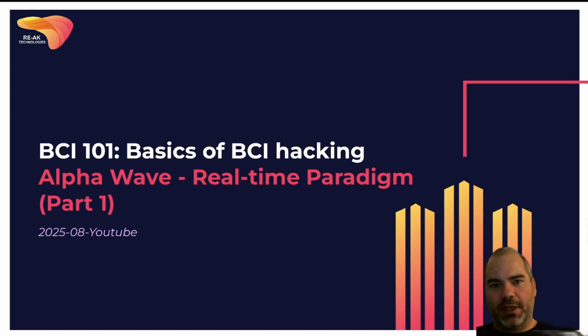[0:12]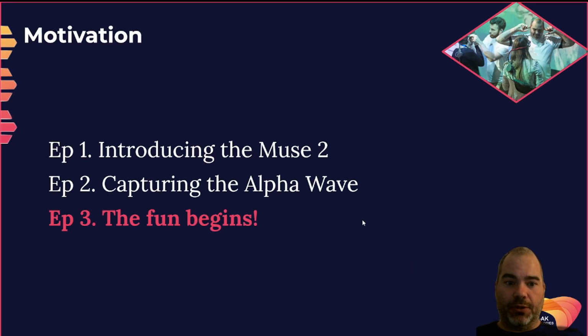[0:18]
We will be building a neurofeedback paradigm using the alpha wave signal that we saw in episode 2. Just a quick reminder, in episode 1, I introduced the Muse 2 as a BCI hacking device of choice. It's a device that is accessible. In episode 1, I showed a few signals, the way they show up when you first put on the Muse, and what you get in terms of the EEG signal, or at least the biometric signal sensed through electrophysiology sensors.
In episode 2, I showed a first experimental paradigm called capturing the alpha wave, where I showed that the alpha wave emerges when you close your eyes. So eyes open, eyes closed, you will see the alpha wave coming up in the EEG signal.
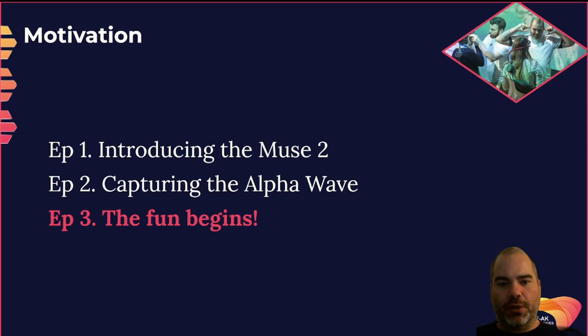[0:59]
And now episode 3, for those interested in brain-computer interfaces, is probably where the fun begins, because we are working towards a neurofeedback application. I try to bring them into the field of entertainment. This is where I operate most of my brain-computer interface hacking.
So we'll look at how we design an experiment. Today we will do some offline design in terms of what we want from the experiment, and a few simple models of how to capture the features that will be used for the true online paradigm.
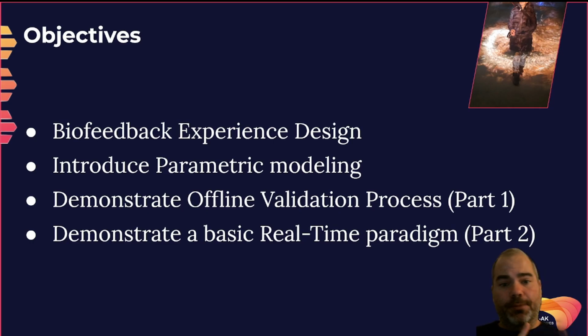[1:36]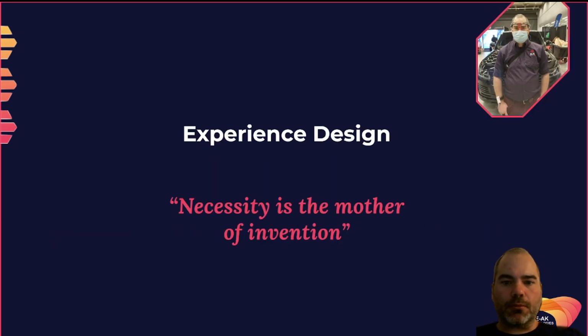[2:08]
So the objectives for today: I want to introduce biofeedback experience design, and introduce parametric modeling, which we'll be using to model the features that we'll use for the real-time paradigm. We'll demonstrate the offline validation process: how do we use offline data to build and model the features that will be used for the real-time operation? And part 2, which will be the next video, will demonstrate a basic real-time paradigm where we have neurofeedback taking place using the alpha wave.
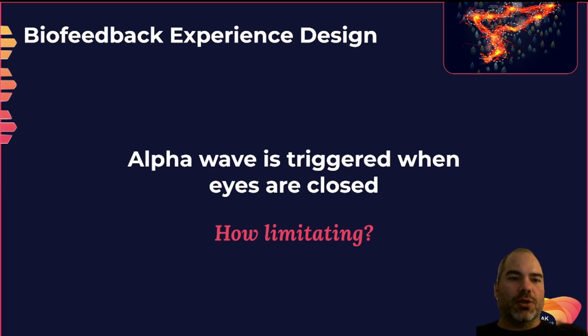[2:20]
First part, experience design. This motto here, one that I love a lot, is: necessity is the mother of invention. I'll come back to this in 2 slides. So in terms of biofeedback experience design based on the alpha wave, there's one thing that stands out: to trigger the alpha wave, you need to close your eyes.
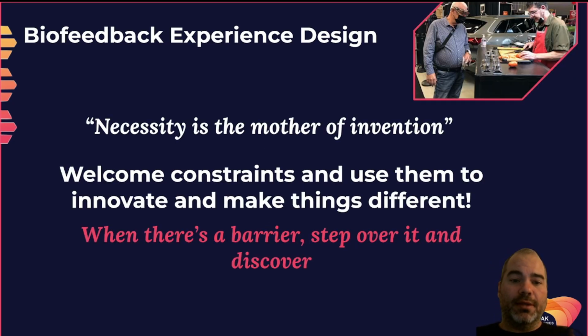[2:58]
Now, this can be seen as a limitation because we want to provide some feedback to the user, but if eyes are closed, we can't use visual feedback. We could see this as something very limiting, something with no way to work around. But if we use this limitation and see it as a challenge to develop something new, this is where I think that necessity is the mother of invention.
That is, instead of being blocked by the barrier that eyes are closed, let's work around this limitation and develop something that is new. And I think this is something you need to take into consideration when you develop brain-computer interfaces. The technology itself is very limited, has a lot of limitations, I would say. And if you want to develop nice hacks and nice applications in the field of brain-computer interface, you need to be able to find barriers and step over them to discover new ways to use the technology. This is an absolute necessity if you want to thrive in that field.
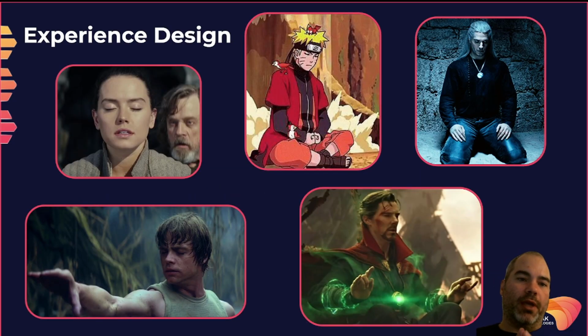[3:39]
So just a parenthesis here. We might consider eyes closed as a limitation, but here I pulled a bunch of examples from various sources. Like I said, I'm in entertainment, so let's see how eyes closed can support some kind of narrative. You see here I have 2 samples, obviously, from Star Wars. We have Luke Skywalker when he wants to use the Force to lift the X-Wing in the swamp during his training, and he has his eyes closed to show how he needs to be mentally focused.
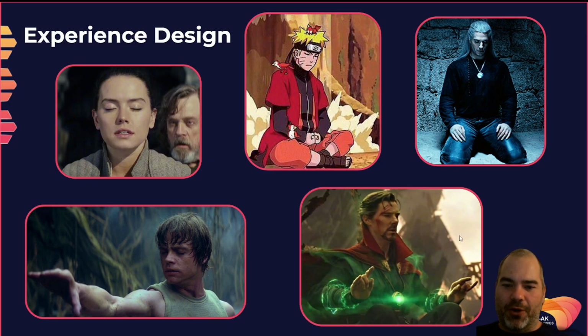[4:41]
We have Rey here in training that also uses closed eyes as a way to be more focused and align with the Force. We have Naruto here mixing the chakra during a battle. Imagine you have to stay calm during a battle to build this power that you can then use to cast spells or, in this case, some jutsu. We have another example here. This is Doctor Strange in the Marvel Universe, where his eyes are closed while he's, I wouldn't say he's mixing chakra here, but he's definitely casting some type of spell that requires concentration. And we have The Witcher here, who needs to meditate to speed up healing and recover from a battle and some injuries.
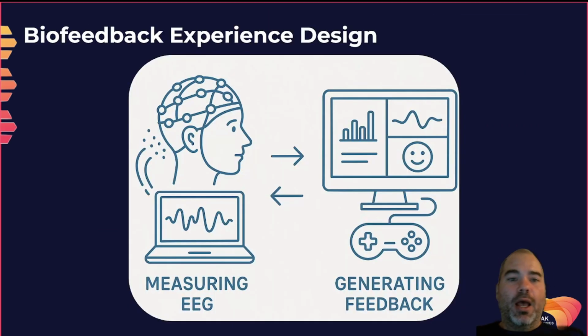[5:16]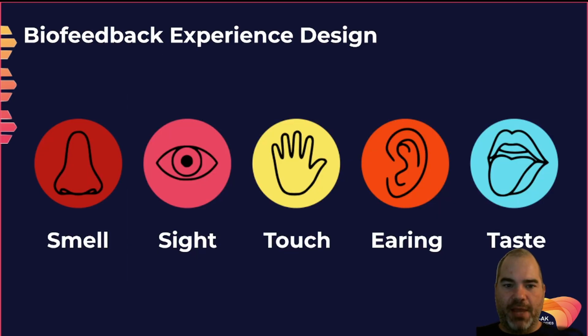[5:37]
So you see, the effect, now we already opened this door here, that the fact that eyes are closed is not incoherent with some entertainment and experience. So the basics of biofeedback experiences is we're measuring EEG or any biosignals for that matter. Those signals are sent to a system that will interpret them and will generate some form of feedback, okay, that can be then taken into account by the user. So we need to provide this feedback.
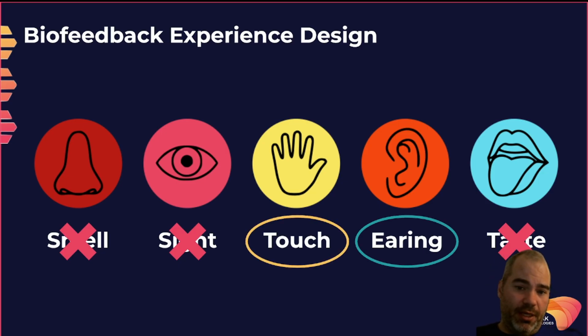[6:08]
There are five senses, okay? There are other ways, but I mean, the basics is there are five senses. Now, the fact that the eyes are closed, we need to rule out sight. For this specific biofeedback experience, we cannot use sight. Then we have smell and taste, which we could technically find some ways to use, but I'd say that for the current BCI 101 hacking, it's a little bit challenging to develop something using smell and taste. So it leaves us with touch and hearing.
Now, in regard to touch, it's a little bit more complex, but there's definitely something super interesting that can be done. A few years ago, I developed a glove that was providing vibration, heat, and cold feedback to the hand, okay? And I actually connected it with the alpha wave. So the idea is that you could cast a fireball, and as your eyes were closed, you could feel the heat in your hand using that glove. Now, this hack is a little bit more elaborate than what we can do quickly with the Muse and ear. So for today, we'll focus on hearing.
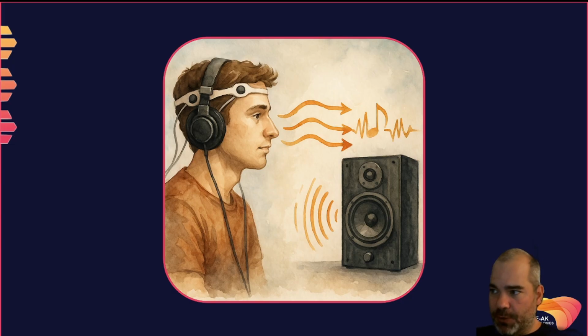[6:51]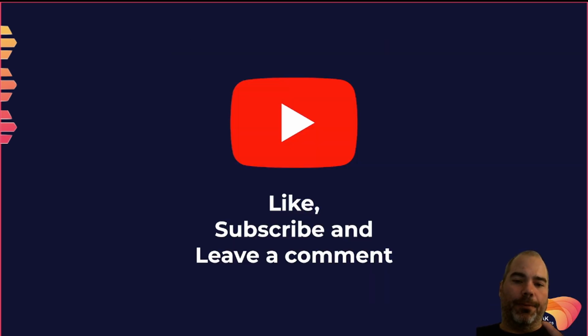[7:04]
So we'll plan at least to provide some auditory feedback during the biofeedback experience. So this is the modality that we'll be using. This is the experience we'll be using. So our user will wear the BCI headset, the Muse, and they will be provided with audio feedback. So now we have a goal of what we want to design, what we want to build.
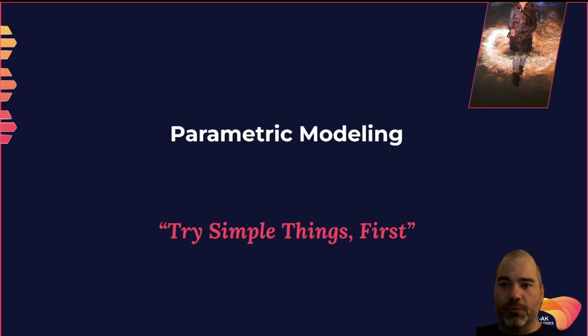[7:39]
So now we have a goal as to what kind of experiments we want to design. The auditory feedback, we'll get into it in the next episode, but for now we want to transform. In the last episode, we saw the alpha wave. We saw it through frequency analysis. I'll bring back this graph in a few slides. But now we need to measure it, we need to detect it, we need to develop something that not only shows it on screen, but that makes it possible to detect the alpha wave in real time. So this is what we will be working on for this specific episode.
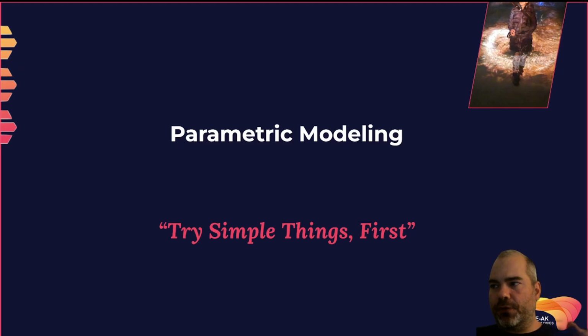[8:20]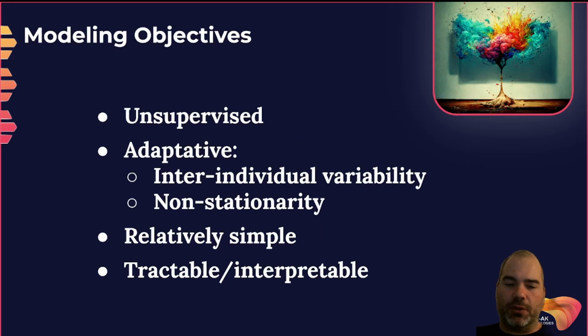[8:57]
I want to introduce, for some of you, parametric modeling. Parametric modeling is the idea that we use some machine learning algorithm where we fit some parameters to find some characteristic of the feature that will be used in the experiment. Another motto here: try simple things first. I've been in the field of machine learning for a long time, and I found that recently people are quick to go straight to deep learning. I hope that through this episode you'll see that there are simpler models available that are sometimes very sufficient when you want to build something. So this is why I say try simple things first. It's kind of a rule of thumb in machine learning. If a simple model can do the job, prefer a simple model over a more complex one.
Modeling objectives here, we want something that is unsupervised. The challenge we have here is to build something that will extract the features of our signal, but we don't want to have our user go through some form of calibration, or at least not one that is explicit. So we want something that is unsupervised. We don't have access to the labels, and you see that we achieve that. We want something that is adaptive. Why do we need something adaptive? We want to be able to account for inter-individual variability. So if we have two persons doing the experience, the system needs to adapt to each of them.
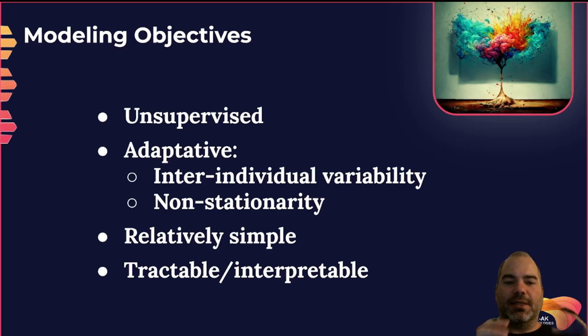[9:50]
Okay, this is what we call inter-individual variability. So I wear the BCI headset, someone else wears the BCI headset. Even if we're aiming for the same feature, there will be some slight difference between them. So this is inter-individual variability. This is why we need adaptation. I'd say that this is the topmost reason in this case.
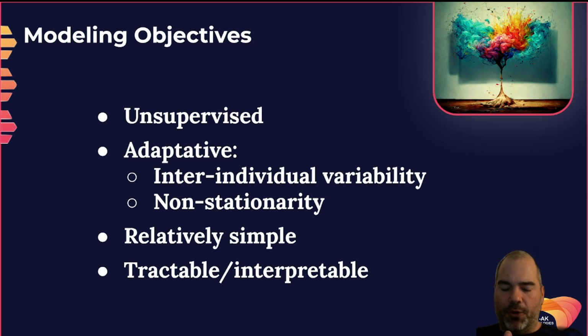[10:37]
And then we also want something that will fit and adapt to non-stationarity. So if I do an experience that lasts for, let's say, 30-45 minutes, some of the features might change a little bit over time, for various reasons. So adapting to non-stationarity means that even if the characteristic of the feature changes... This is generally a limitation of explicit calibration methods. They will calibrate the system early and during the experience, but as the experience goes, people tend to shift a little bit their mental states, and then what has been calibrated early on is not necessarily as good when the experience drags on. So we want something that will keep on adapting, keep on improving as the experience goes, and react if something changes in the mental state.
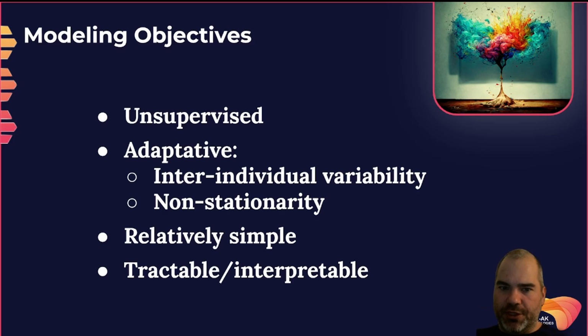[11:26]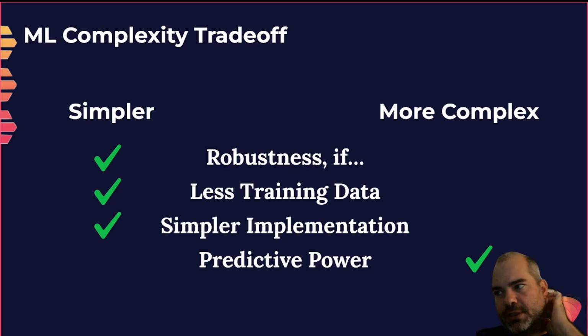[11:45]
We'd prefer something relatively simple. Try simple things first. We need something that is sufficient, that works well. We don't need to over-engineer, over-design the system. And ideally, we also prefer something that is tractable, interpretable. That is, if we use a complex algorithm, sometimes it becomes a black box. That is, it works or it doesn't, but when it doesn't work, you don't know why. Especially when we start with simpler hacks, we want something that we can debug, something that we can understand to guide us towards fixing the issues that we notice. So we want something that is tractable, interpretable, that when we see the results, we understand how the system got there. So this is the objective I set for this demonstration.
This is the general machine learning complexity trade-off. It's just like a general rule of thumb that you have when you do machine learning. So simpler models, especially parametric models, will generally be more robust, okay? But more robust if sufficient. That's always important to say, because simpler models don't have the same potential as complex models, but if they're sufficient, they're generally more robust to outliers and bad data, or even unbalanced data sets. Generally, simpler models require less training data. This is what we want here, something that requires much less training data.
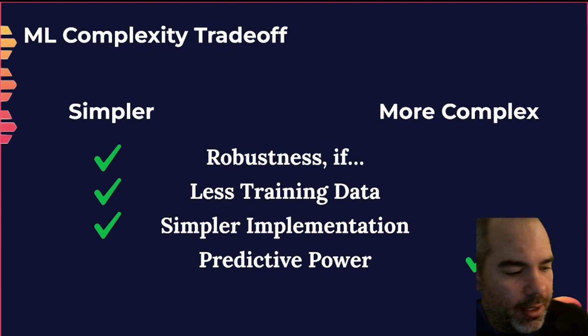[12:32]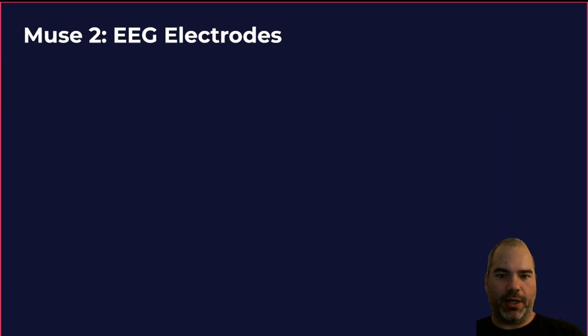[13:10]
Simpler implementation, okay? Linear regression, which technically is the simplest model ever, has only two parameters to fit and can be fit within a few lines of code, 3 or 4 lines of code. A deep learner needs a full module and a whole system to be implemented. So generally, with a simpler model we have a simpler implementation, but we have to always consider that a more complex model will generally have better predictive power. So it's really a trade-off, and the idea as a machine learning engineer is to find the simplest model that is good enough for the job. That's always what you're doing when you pick machine learning algorithms.
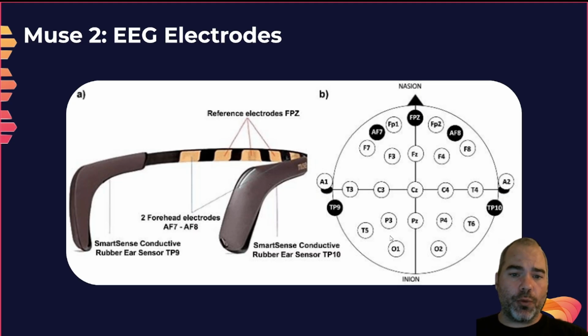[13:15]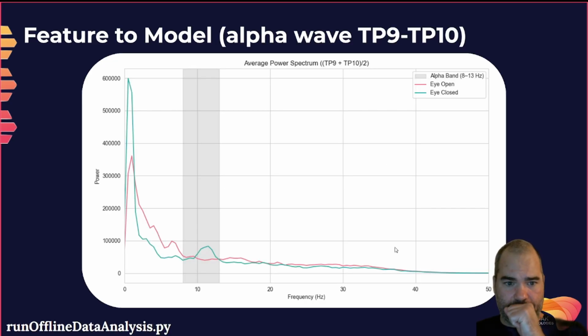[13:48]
Just a quick reminder of what we're working with here. So we have the Muse 2. There are 4 sensing electrodes, so TP9, TP10, and frontal AF7, AF8. In regard to the alpha wave we are interested in, the alpha wave originates from the occipital lobe behind the head. So we will be focusing on TP9, TP10. This was already validated by me offline when I was looking at the signals and the different channels. So TP9, TP10, this is what we'll be using to sense the alpha wave. Those are the 2 channels we'll be using for this experience.
These are the results that we got at episode 2, and what we see here is eyes open, eyes closed. We see that when we close our eyes, we have this bump that appears, which shows the alpha wave. In theory, it is between 8 and I think 12 or 13. Okay, so this is the shaded region. This is the alpha wave, 8 to 13, yes.
And of course, someone could say, hey, look, your peak is a little bit more towards 11, so I could restrict a little bit the range of frequencies, but I want my experiment to work with anyone. And from one person to the other, the alpha peak might shift a little bit. Okay, so the idea, let's use the theoretical band for the alpha wave, and this is the signal that we want to capture.
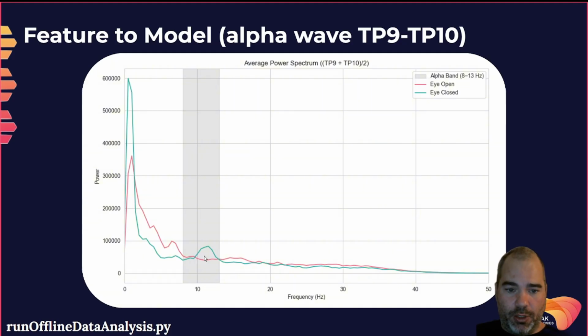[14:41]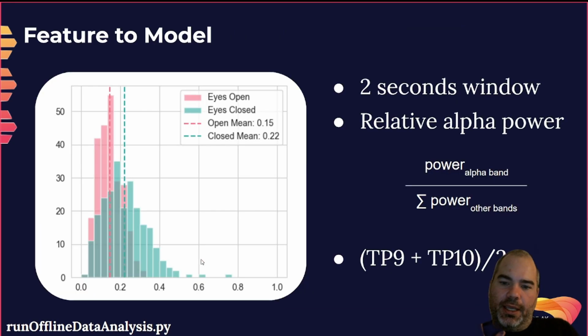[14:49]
This was picked up with the Muse. Okay, the signal to noise ratio could be better if we were using a different device, but with the Muse, this is what we're working with. Now, offline, before the video, I did some trial and error to find out what is the best statistics to use, the best feature to use, basically, and the one that provides the best statistics for what we want to do. And what I found is that relative alpha band power is the best feature to model.
So I'm skipping today over the 2 seconds window sampling. I take the whole time sequence and I break it down into 2 seconds windows. We'll see that in the next episode, when we'll do the real-time paradigm, I'll explain this part. So I generated a bunch of samples through this, and for each sample I compute the relative alpha power. So you compute the power in the alpha band, and you compute the sum of the power of all frequency bands, and you divide the alpha band by the sum of all power.
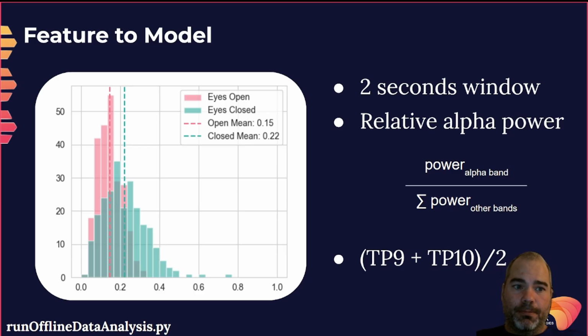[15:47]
By doing this, you ensure, by the way, that your feature is necessarily between 0 and 1. Because if there's only power in alpha, it's going to be 1, and if there's no power in alpha, it's going to be 0. So it restricts your feature. It normalizes it, so it makes it more tractable, it makes it easier to work with. So through my tests, I found that relative alpha power is the best feature to model for this experience.
I'm computing the average of the relative alpha for TP9 and TP10. In my experience, I found that TP9 is actually better than TP10, but because I want this to work with everyone, I want the robustness that comes from sampling 2 electrodes instead of building the experience around a single electrode. So even though the performance is a little bit less good, I prefer to use the sum of both electrodes instead of using a single one. So this is the feature that we want to work with for the experience.
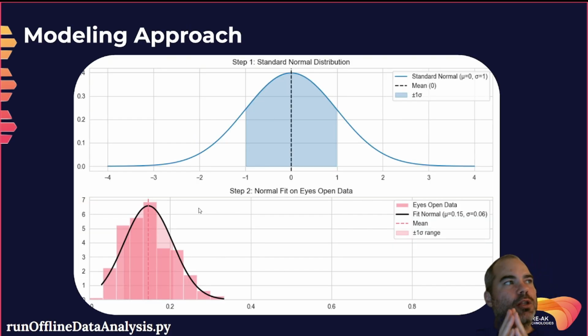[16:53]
Now, the modeling approach we'll be using first, I said it earlier, is parametric modeling. Parametric modeling is when you make some assumption about the distributions of the feature that you want to model. Non-parametric modeling is one where you don't make any assumptions. So I want to use the standard normal distribution. Now there's a few reasons here. It's not the best model. I'll give you the answer, I think, on the next slide.
But the standard normal distribution is a distribution that is very easy to work with. There are many tools to work with it. It's a very well-defined distribution. There are many analytical solutions, and it's generally good enough for many applications. Not all of them. You always need to ask yourself, what is the cost of using a normal distribution if it's not truly a normally distributed feature?
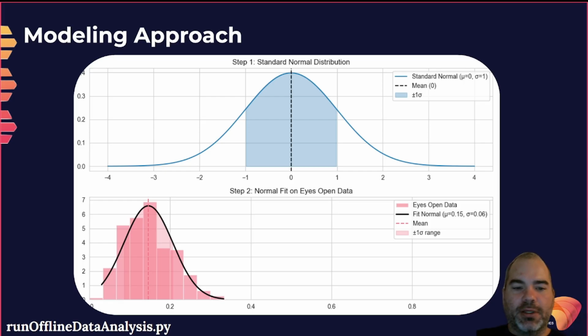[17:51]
But for the current experience, I'll show you some data here. So this is real data that we'll be working with. This is the eyes-open data. So I fitted a normal distribution over it. And you see the distribution is slightly skewed. We don't have that many samples, but already we see some skewing that takes place here, where the distribution is a little bit heavier on the left side than on the right side. There's a little bit of a tail here, so you see the data goes a little bit longer here.
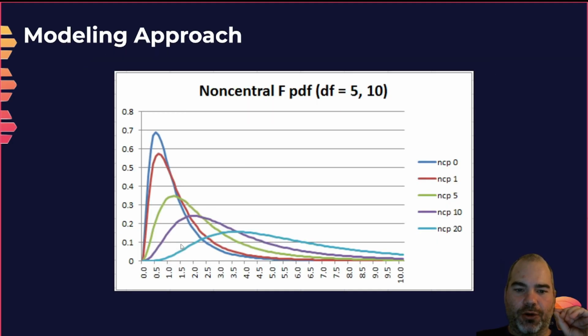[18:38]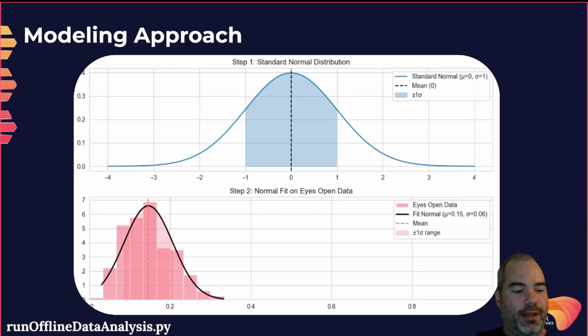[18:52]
Here it's bounded. The fact that it's bounded already tells you that it cannot be a true normal distribution, because the normal distribution is unbounded. So there's a bound at 0. It cannot go in the negative range. But you see that even though it's not truly a normal distribution, the fit is not too bad. I'll tell you the real answer: generally if you do a power band ratio, you should find a non-central F distribution. This is the theoretical solution to the problem of fitting a power band ratio.
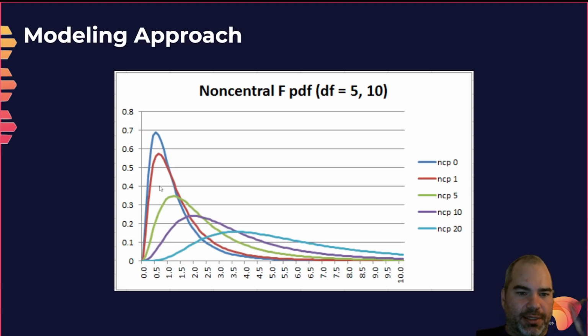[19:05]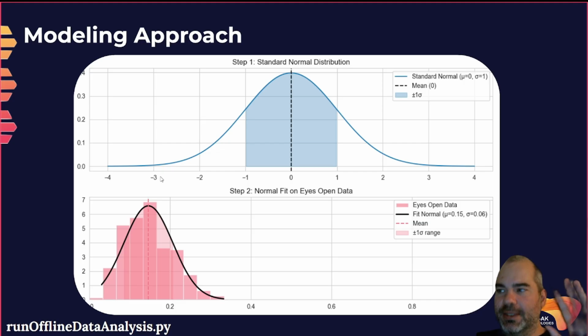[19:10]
Because EEG is pink noise. Okay, so I'm not going to go further down here, but this is the idea. You see, even though the true solution is a non-central F distribution, a normal distribution is good enough for the problem we want to do. And the benefit is that it's much simpler to work with than a non-central F distribution.
By the way, you'll see the name of the files here, because in the description you'll find the link to the GitHub. In episode 3, you'll find all the files to regenerate these graphs and these results, as well as some sample data. So if you want to reproduce this, you have all the data here. To get this, you run offline data analysis.
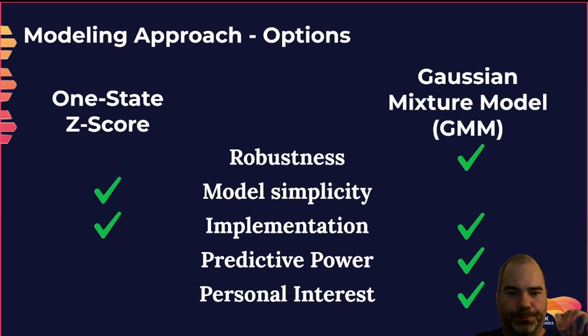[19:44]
Okay, so this is the modeling approach we'll be using. We'll use a standard normal distribution. Now, when I designed this experience, I had two ideas in mind. The first was to build a two-state model using a Gaussian mixture model. I actually worked all my way through the Gaussian mixture model, but then I said, no, given that it's a YouTube video, I had the feeling that the one-state z-score could work as well, and I did it.
Basically, because it's a YouTube video, I want people to learn from this. So I said, you know what? I'll just redo the whole thing with a one-state z-score, so we can compare both models. We'll see how both work here, and I'll explain both of them. I had good results with one-state z-score in other experiments, so we'll see both.
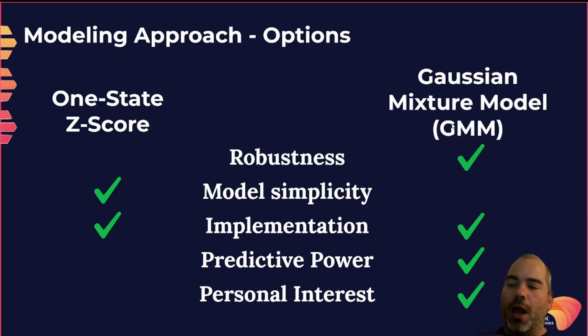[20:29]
Just from my knowledge about these two models, I built this kind of table here. In terms of robustness, I would expect the Gaussian mixture to be a little bit better, because the true system, eye closed, eye open, is inherently a two-state system. So with the Gaussian mixture, we will try to fit these two states. For model simplicity, the one-state z-score is definitely simpler because we're fitting a single distribution. The implementation is also simpler on the one-state z-score, but let's be fair, the Gaussian mixture is not that complex either. We're not dealing with a very complex model here, and I worked with the GPTs, and ChatGPT was able to generate both models entirely with one query. So implementation was not a challenge here.
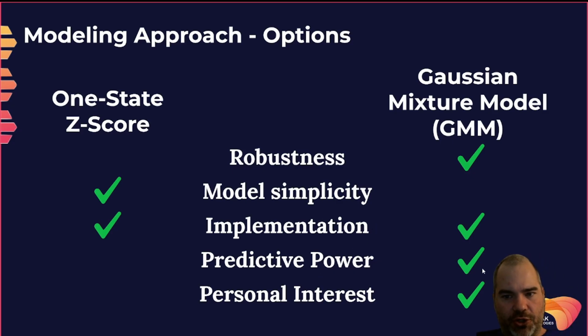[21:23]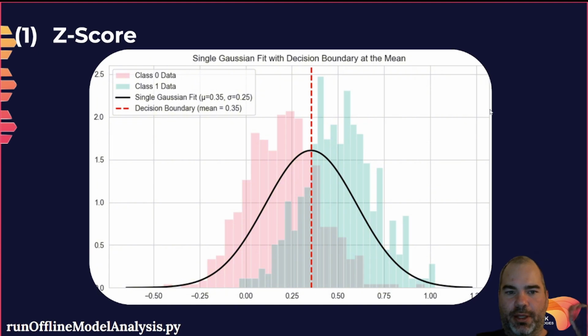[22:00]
For predictive power, the Gaussian mixture is definitely better, because it becomes an unsupervised classifier. Basically, that's what we build here, while the one-state z-score is not inherently a classifier, or at least it's not as good. I also had a personal interest in the Gaussian mixture model because it's a little bit more challenging. Recently I built a one-state z-score for a different problem, and it was very fresh in my mind how it was going to behave. So this is why I preferred the Gaussian mixture model, but like I said, I built both for this video.
The z-score, option one, the way it works is, basically, this is theoretical data, we do have two classes, but we fit one distribution over all the data. Then, because we have the mean and the standard deviation from fitting the data, you can transform each sample to a z-score. If a sample lands straight on the average, the z-score would be 0. If a sample lands one standard deviation above the average, you'll get a z-score of 1. And if it's one standard deviation below the average, you'll get a z-score of -1.
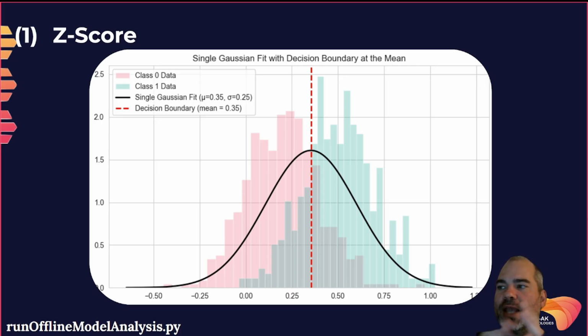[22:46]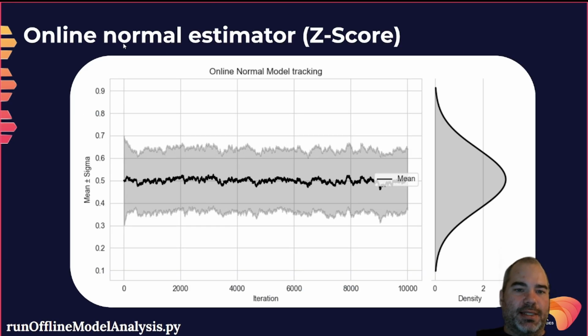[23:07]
So it builds this transformation function where your samples are no longer represented by their absolute value, but rather by their z-score value. For many situations, if you have a one-state system and you just want to know how far your sample is from the mean, this is a very good transformation. And this is the online normal estimator, the way it works. We'll run our data over each sample.
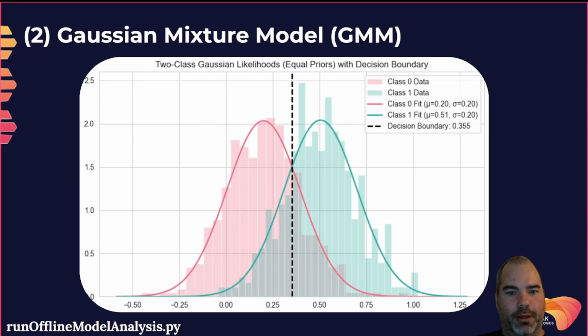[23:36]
Samples are 2 seconds windows, and over time we try to best estimate the mean and the standard deviation. Now, I should have started with a different prior, but the idea is you see from the prior hypothesis where it lands. We'll see it more with the Gaussian mixture model. So this is our first model that we'll be using. We call it the z-score transform.
The Gaussian mixture model on the same data instead assumes that there are two distributions, and we'll try to fit two distributions over the samples. Remember, it is an unsupervised model. Okay, so there's a logic here. Every time there's a new sample, you look at it, you say which one it is most likely to belong to, and then you add the sample to this distribution, and then you update the parameters of the distribution. Now it's not bulletproof.
Okay, if your prior parameters are not tuned, you are at risk that all samples will fall into one distribution. But if your priors are not too far away, it will manage to parameterize the two classes distributions. So this is the Gaussian mixture model.
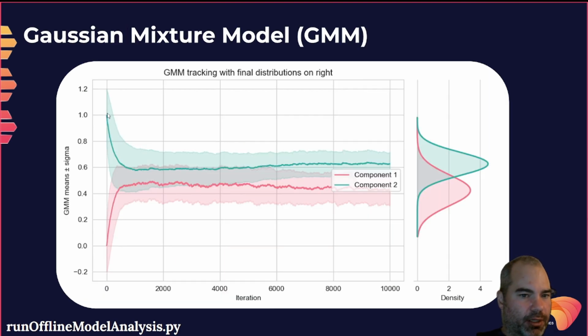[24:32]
Now here we have a better demonstration of online fitting. I started, the green one had the prior of an average of 1, and the red one had the prior, like the prior parameters. It's your assumption when you start. Now I obviously pick 0 and 1 to maximize the effect, and you see I sent a bunch of random samples, and over time both distributions found more or less the right distribution parameters. So it's an online learner that will, as the samples come in, parameterize our two states, which for our case will be eye open and eye close, obviously.
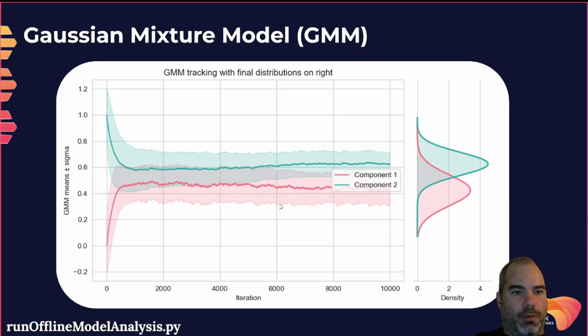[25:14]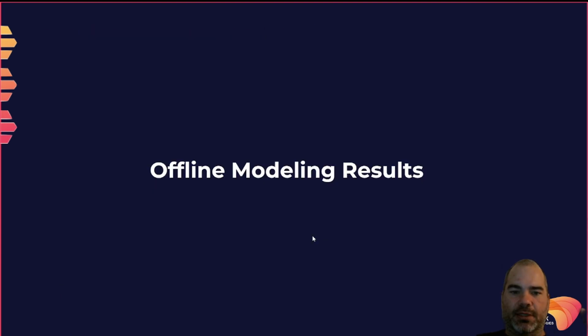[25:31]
So those are the two models. The normal distribution, the z-score, we fit a single distribution, and we transform samples into z-score. And this one here, we have two distributions, and now it becomes kind of like an unsupervised classifier, and you'll see how this works.
So this is the offline validation. I say offline, it runs on the same data that I recorded during episode 2. Okay, so here, the green is eye open, eye closed. There are 4 trials. Each shaded region lasts 120 seconds. Okay, so we start the model, and it learns online, unsupervised. So the model doesn't have access to the labels. Keep that in mind, unsupervised.
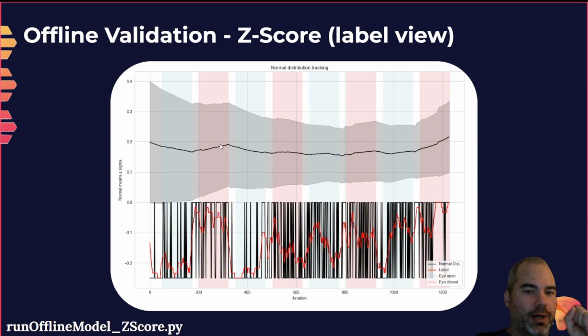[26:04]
And you see here, for instance, when I close my eyes, you see how the model is pulled in one direction. You see it here, you see it here. Here is a very basic classifier that I built simply by checking if the z-score is positive or negative. That's the only test I did, just to get a sense of, if we use it as a classifier, we would expect to find eye open to be negative and eye closed to be positive. And we see here that it doesn't really perform as a classifier at all. It seems like it does a little bit, maybe, but it's definitely not a great classifier at this point.
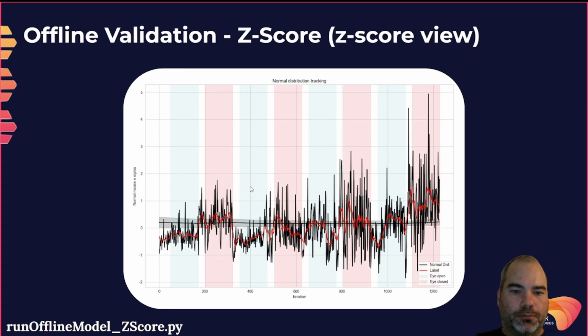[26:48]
If we look at the z-score, you see I said it needs to be tractable. We can still work, and instead of using the labeling of the classes that I did before, we can map the z-score. And when we look at the z-score, we get the sense that it's a little bit better. The red line, by the way, is just a smoother, so it reduces the noise. The red line is very easy to implement, so we would probably work with the red line. It's a smoother version of the black line. We do see that it works a little bit, but it's definitely not great.
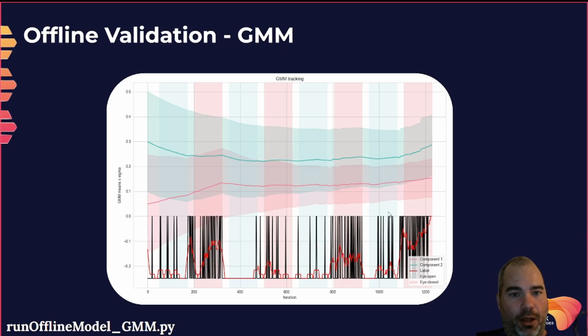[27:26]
Now, this is the online GMM. I say online because it learns with the samples over time, but it runs on offline, pre-recorded data. And now we see a little bit of how it works. First, it's definitely better. We see this one here is not great, but it could be because the signal to noise ratio for this specific trial was not as great as the other ones. But for the other ones, keep in mind, even here, I closed my eyes before the region. So the instruction was given right there. So generally, I close my eyes ahead of time.
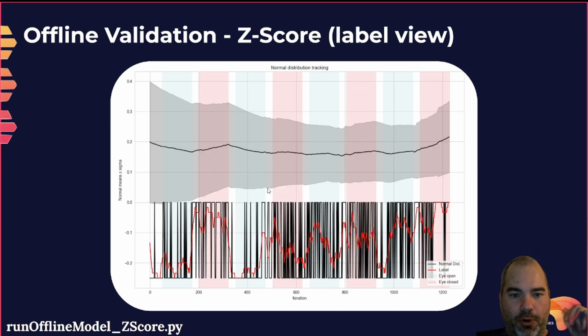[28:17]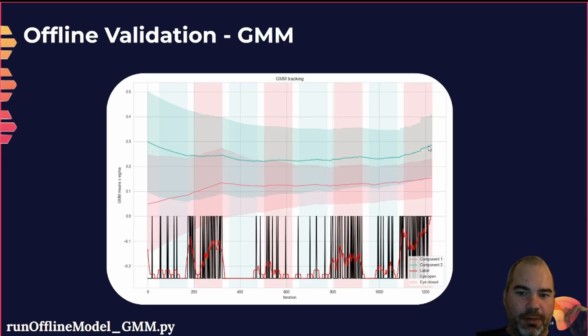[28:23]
So this is why we see that it goes there. And it definitely works better. You see, even with the smoothing version, it's almost perfect here. And we see also, remember here how the model is being pulled in one direction, especially here, we see it a lot. Well, you see now, when it's being pulled, it pulls one of the distributions more than the other.
This is where the Gaussian mixture model is more robust: if you have many outliers or many samples that are outside the currently modeled bound, it will bring one of the distributions much more strongly than the other one. And this is what grants it a lot of robustness. And you see the priors were 0.3 here and 0.5 here.
It was intended that I use these priors. I could have used the priors that were computed from the data, but I didn't want it to be spot on right away, to give the model a chance to show its adaptation capability. So this is what I did here. And now it's not perfect. Keep in mind, it's an unsupervised classifier. I treat it as a classifier, but truth is, it wasn't trained on annotated labels.
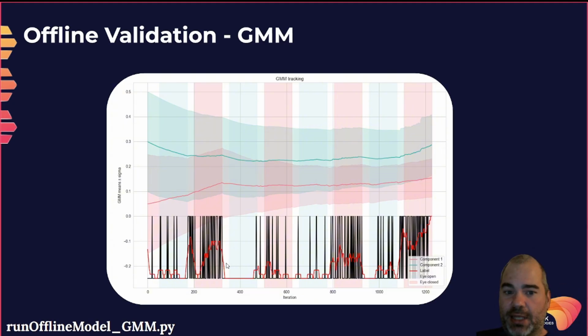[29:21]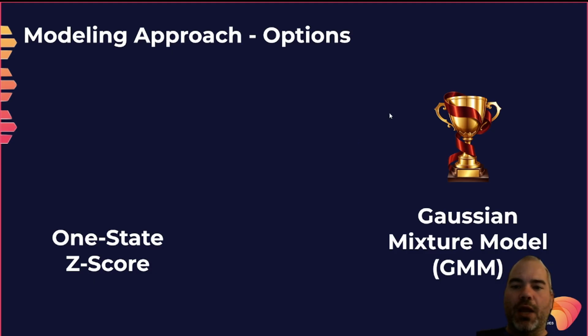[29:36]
It was trained on just data coming in, and it forms its own representation from the data. Obviously, it would perform much better if it was a truly trained supervised classification process. So now we've compared the z-score and the GMM. Obviously, the GMM wins the cup here. So this is the one we'll be working with for part 2 of the video,
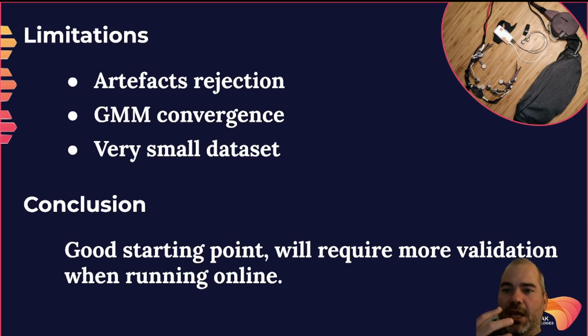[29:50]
when we'll do proper online biofeedback. Keep in mind that there are a few limitations here. First, we are not trying to reject artifacts. This would definitely improve the system as a whole if we were to detect and remove some samples. So we'll work in that direction, but later in the series. For now, I want to keep things simple.
GMM convergence. Now, if we don't start with good priors, there's a way for the system not to work. I did a test that I'm not showing here, where the prior was 0 and 1, and ran it on actual data, and it didn't converge because the distribution that started with an average of 1 didn't receive enough samples to converge. I'm pretty sure that it would have converged over time, but it would have taken much longer. We don't want that. We want to start with better priors.
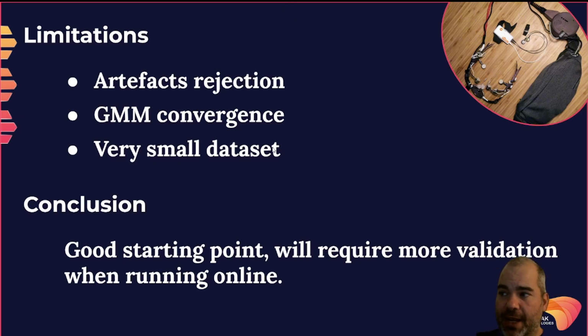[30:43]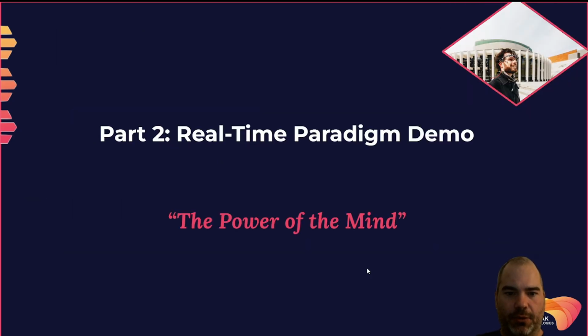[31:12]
We're working with a very small data set, keep that in mind. It's good enough for now. A larger data set will be needed to do a proper evaluation of how the model performs, especially at the population level, when we have many people trying the experience. In conclusion, the GMM is a good starting point. It will require more validation when running online, but this will be our starting point to build our real-time experience in the next episode. So part 2 of the video, which will come up shortly, we will take everything we learned now and turn it into a real-time paradigm where we have proper auditory feedback.
Why did I do it in two parts? The main reason is because I want to keep these videos bite-sized. Like, it's already been 30 minutes. And I try to, can you believe that? I try to make them 10 minutes.
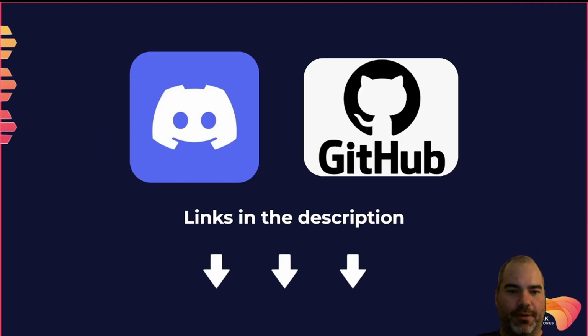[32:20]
Also, any system that I design will start with an offline design, offline test. It helps to de-risk and understand the data. You can do lots of trial and error much more efficiently with this approach of doing offline design. And then once it works in the offline scenario, you turn it into an online scenario, and then you deal with the complexity of making it work in real time. So next video, we take everything we learned today and turn it into a proper real-time paradigm. So you'll see a brain-computer interface in action in real time with auditory feedback.